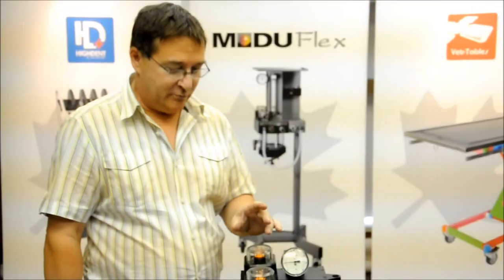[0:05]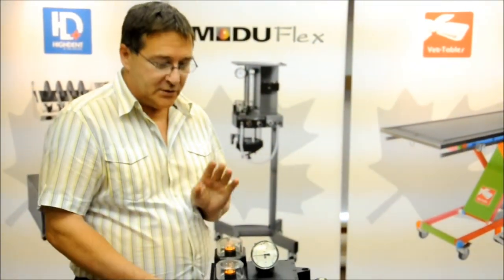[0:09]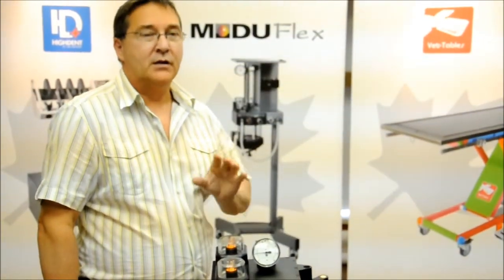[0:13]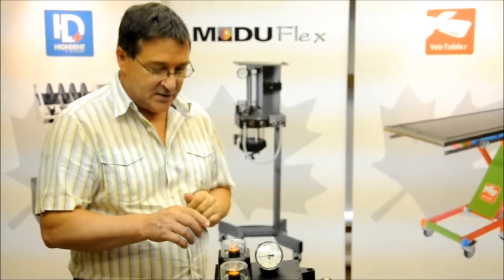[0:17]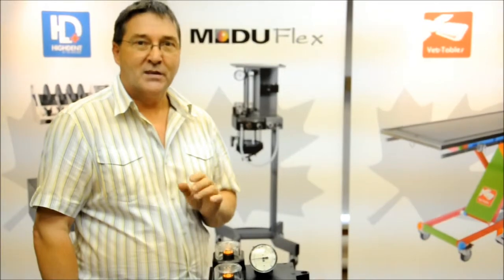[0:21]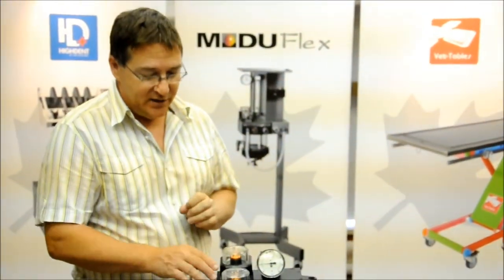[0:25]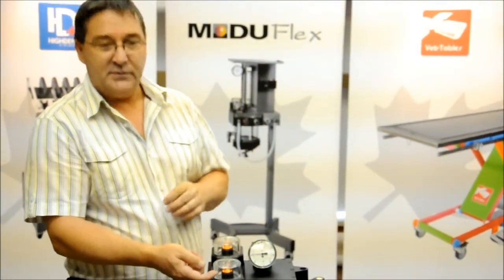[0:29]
The first situation we'd like to address is overpressure in the breathing circuit bag. This overpressure can be caused by a couple of different things. One of the things that can cause this is a bad positioning of the inhalation and exhalation discs. What we need to do is check how much space is located between the disc and the disc pins.
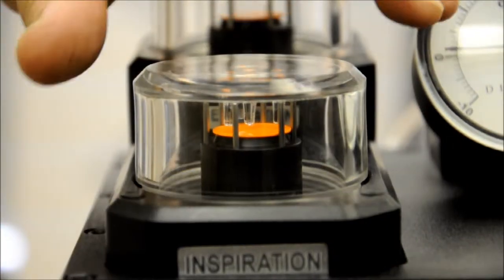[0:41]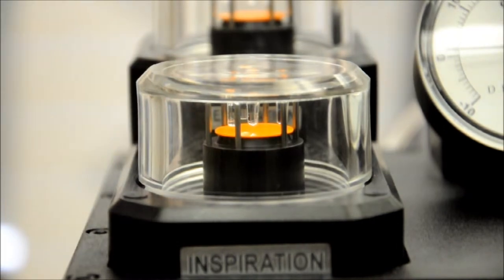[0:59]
For demonstration purposes, we will be using this model of absorber. It may not be the same one that you have, but the parts are all the same. Now, one thing that may happen is during transport, if the box has received a large shock, the inhalation and exhalation disc seats may have become dislodged. If this is the case, then the displacement of the disc, the orange disc or the blue disc on some absorbers, may not have sufficient space to move properly.
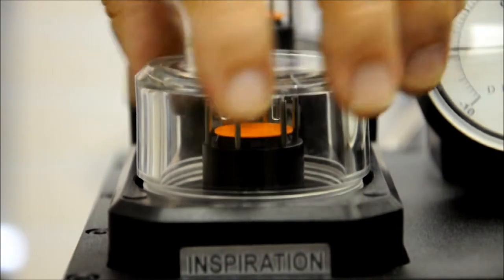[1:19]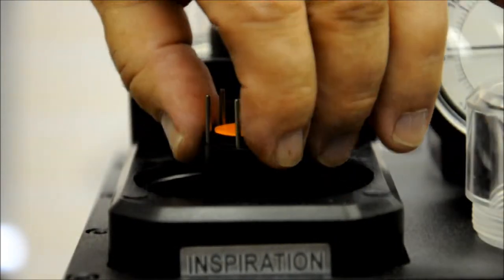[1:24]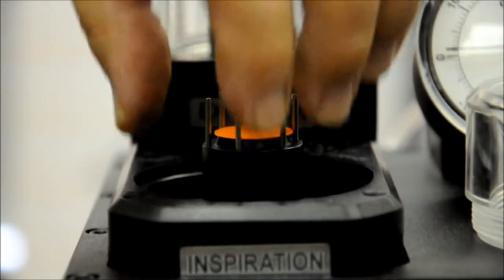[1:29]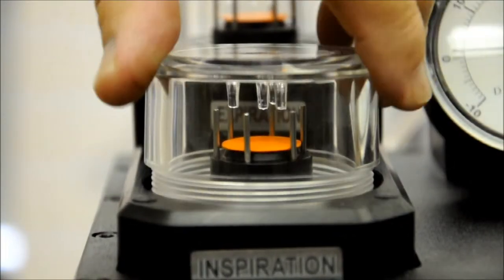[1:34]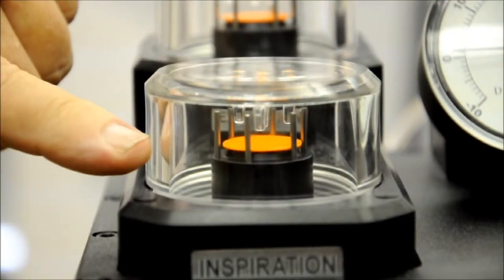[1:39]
If you notice the amount of space right now between the disc and the pins on the dome, they are insufficient. This is because the seat has become dislodged. In order to reposition the seat, remove the dome and make sure that the seat is pushed in all the way. You'll feel a little bit of tension as there's an O-ring being pushed through. Now, when we reposition the dome, you'll notice how much space that we have between the disc and the pins.
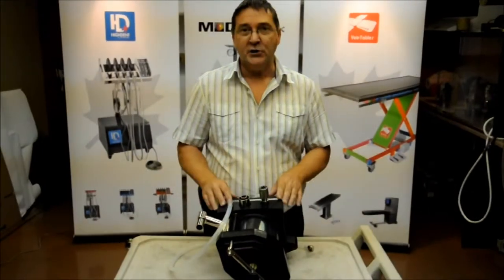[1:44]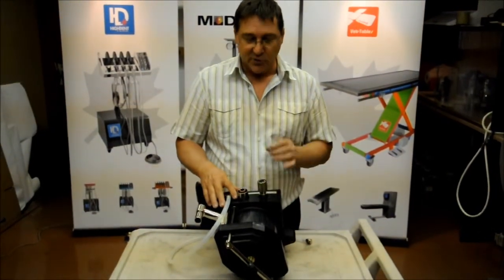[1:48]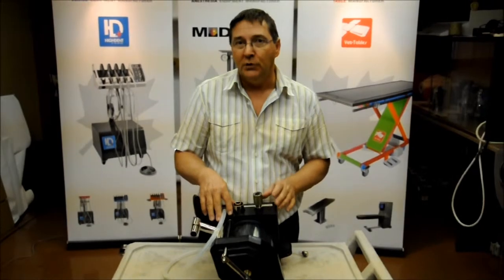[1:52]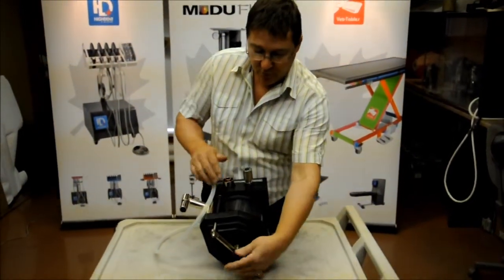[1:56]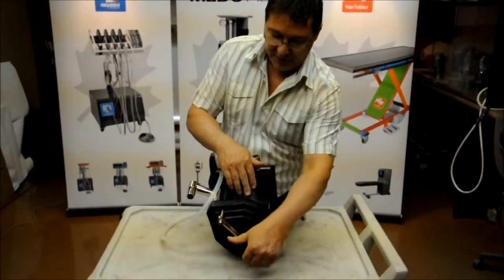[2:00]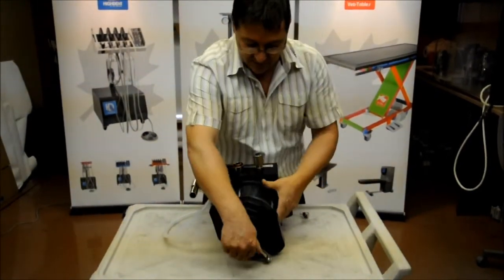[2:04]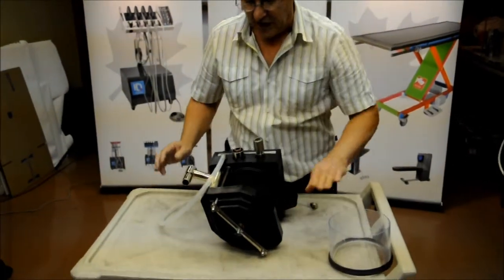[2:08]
Now, for demonstration purposes, I took an absorber and I put it on a table just so that it'd be easier for you to visualize what we need to do. Now, the first thing we have to do is remove the soda lime canister. So we unscrew the screw beneath the canister till there's enough displacement to take it out. And you put the canister to the side.
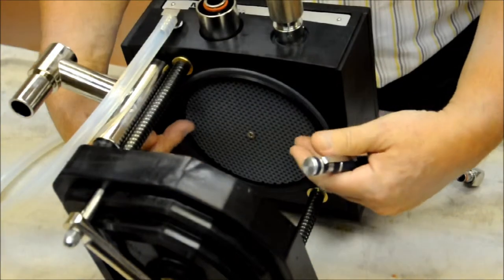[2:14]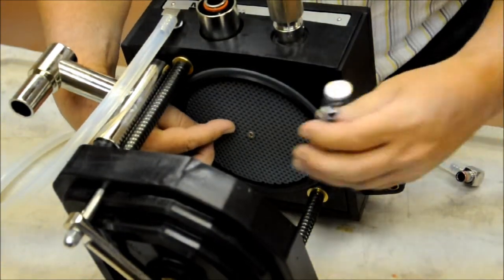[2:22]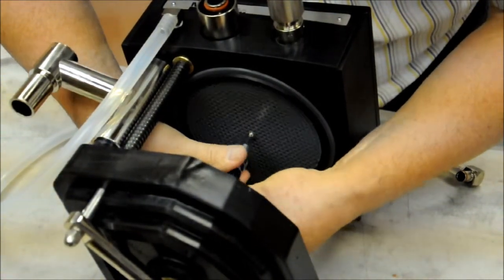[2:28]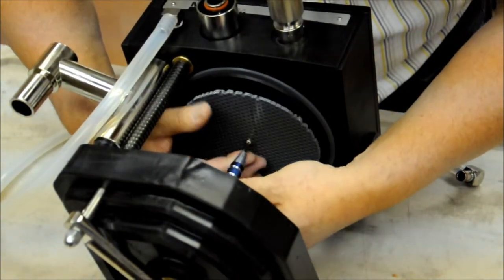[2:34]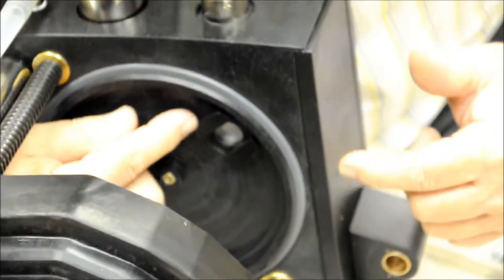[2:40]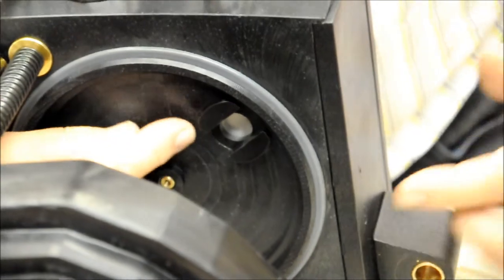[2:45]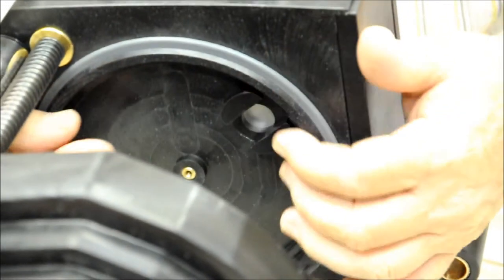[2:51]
When you remove the soda lime canister, you'll notice here we have a perforated grill. In the center of the perforated grill, there's a Phillips head screw. We need to remove this screw and remove the grill. You'll notice that when the black perforated grill is removed, we can see a black piece located here that's got a slot in the center. This is a seat valve.
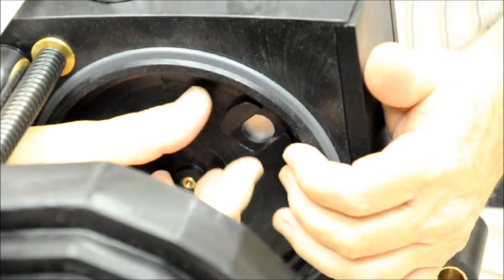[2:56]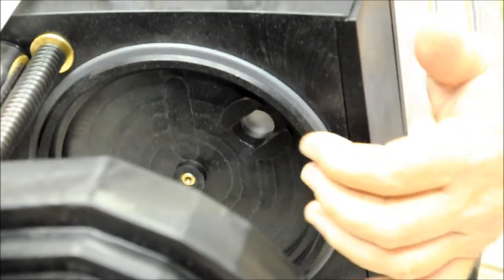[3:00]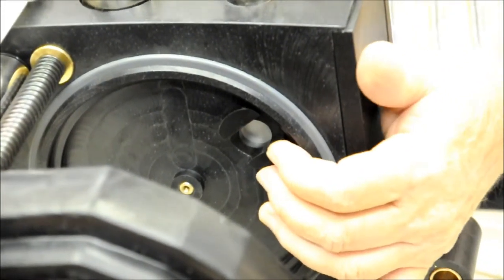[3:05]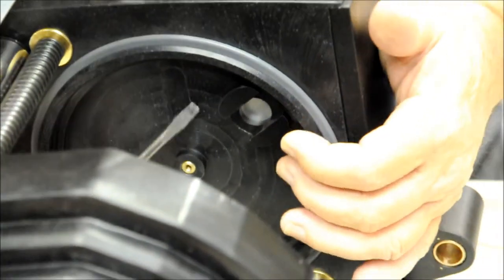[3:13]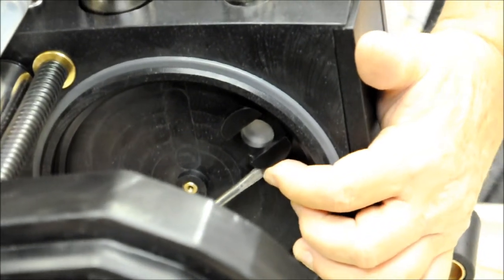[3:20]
This seat valve is what controls the size of the bag. If this seat valve is defective, either by dirt or any other problem, then the bag will be either overinflated or underinflated. We need to replace this seat valve assembly. The way to do it is we take a small flat screwdriver and we insert it on the side, on the edge of the lips on both sides of the absorber. A little bit at a time on both sides, and the seat assembly will pop out.
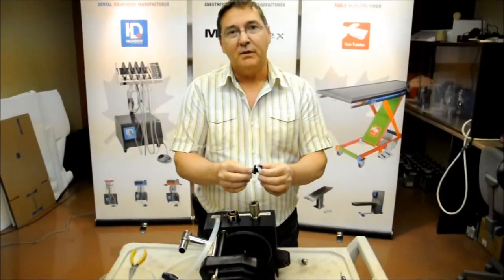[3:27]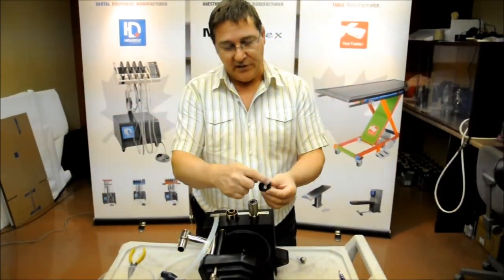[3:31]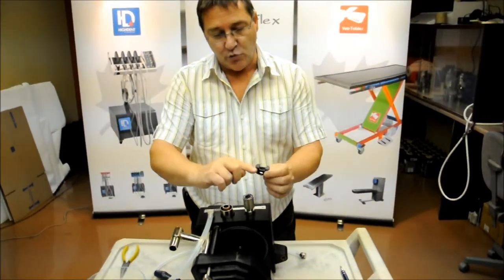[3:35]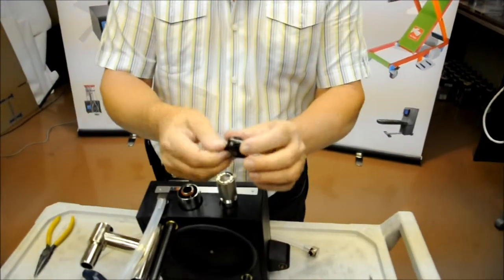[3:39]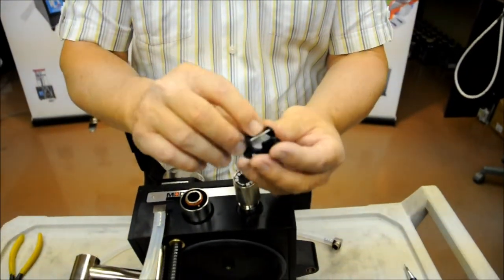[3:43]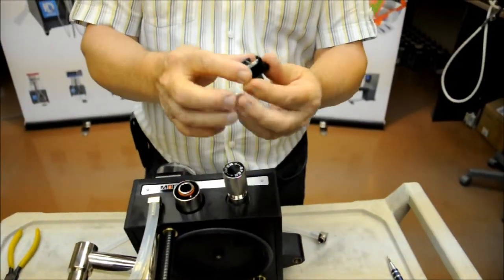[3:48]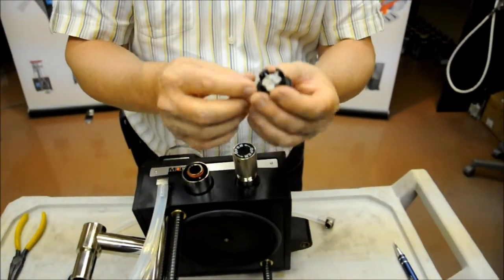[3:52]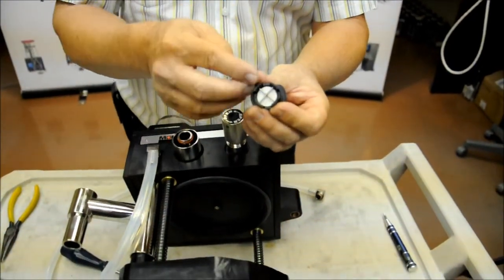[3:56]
This is the seat assembly that we just removed. Notice the edges on each side. When we pried it off, we pried it by inserting the screwdriver below here and below here. Inside of this seat assembly, there's a stainless steel disc with two little rods. Now, the ideal situation is that we replace the whole assembly. If we don't have one, we can correct the problem by flipping the disc over.
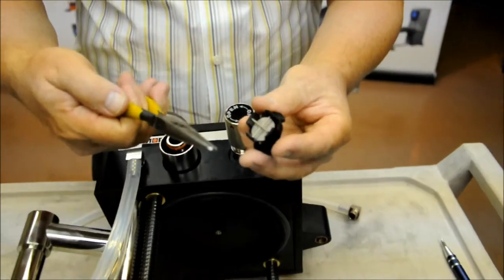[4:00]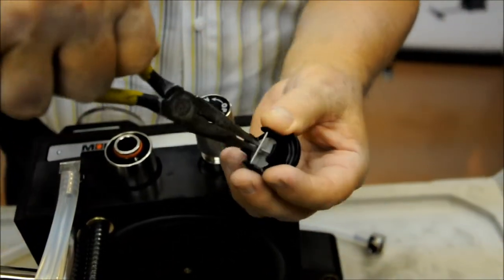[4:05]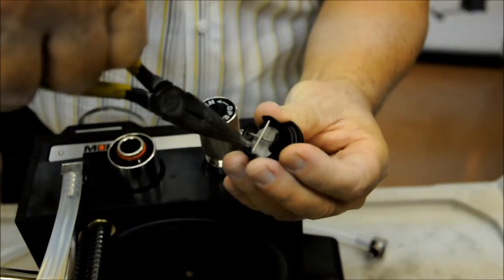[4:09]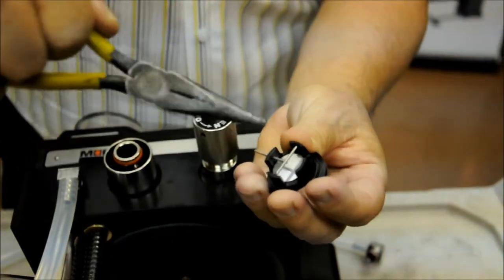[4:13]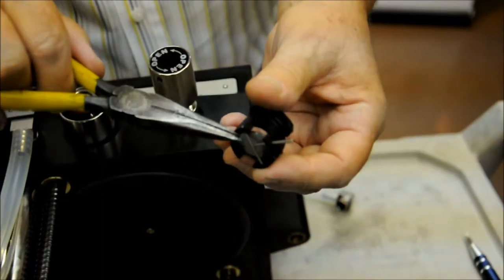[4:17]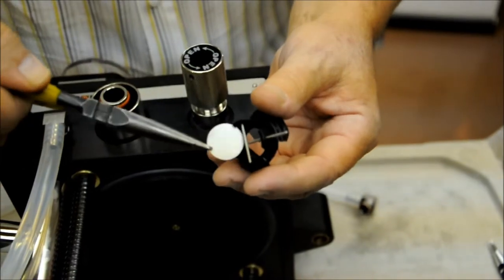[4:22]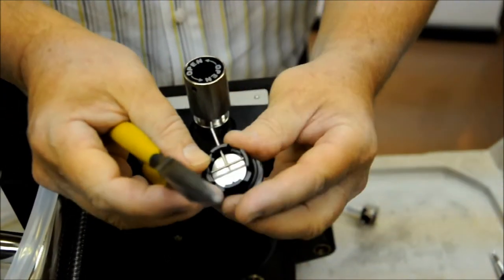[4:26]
In order to do that, we take a pair of pliers and we remove the lower bracket, that's the lower pin that's holding the disc in place. So we just push it out about halfway. Once it's pushed out, we can tilt it over, grab the disc with the pliers, do not force, just pull it slightly and then flip it over, put it back into place and push the pin back in.
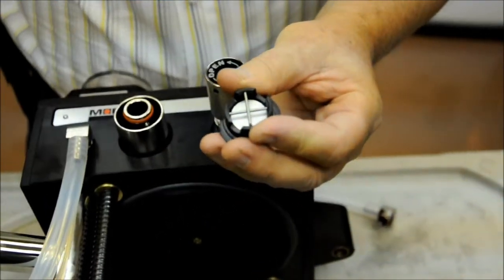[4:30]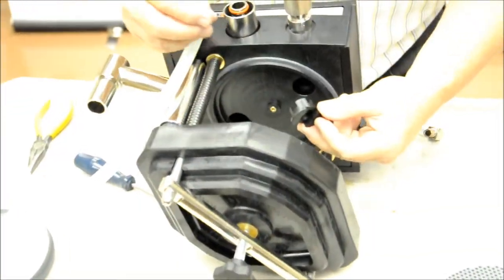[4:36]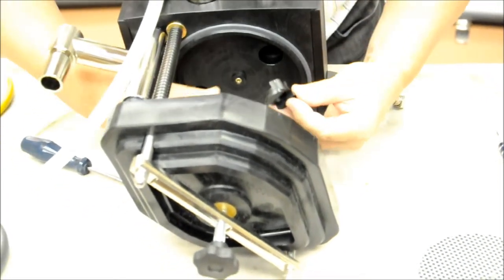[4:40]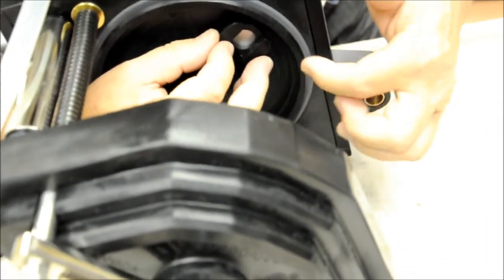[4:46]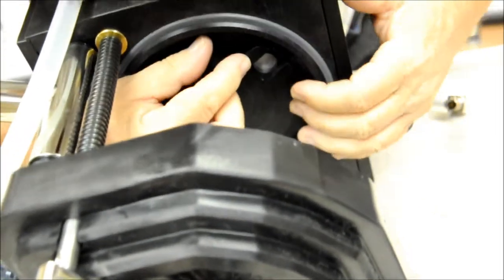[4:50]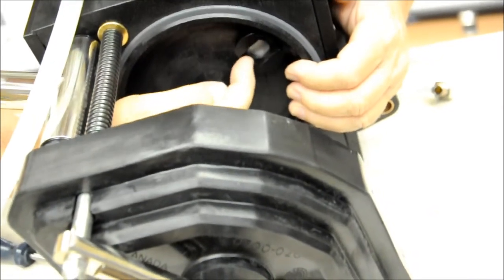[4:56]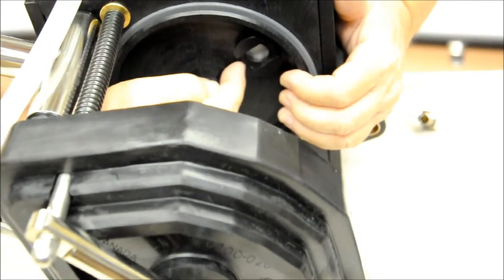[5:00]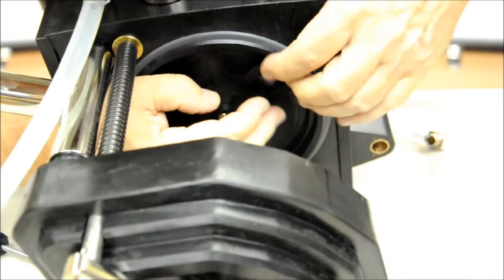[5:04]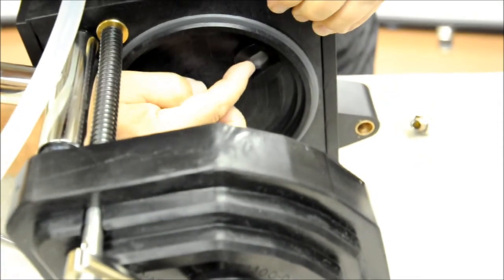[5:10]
Next operation will be reinserting the assembly. Now, to reinsert the seat, it's very important to observe the position. Take the seat, bring it up towards the hole and line up the two edges so that they don't conflict with the outer wall here. We push it in slowly and push it in with our fingers. You'll notice here this edge has to line up with the base of the absorber. Now we push it in. You may require pushing in firmly, and this edge here has to be lined up with the absorber. Once that's done, it's installed.
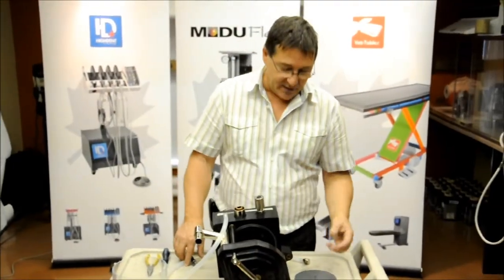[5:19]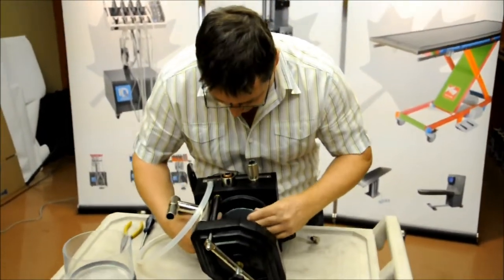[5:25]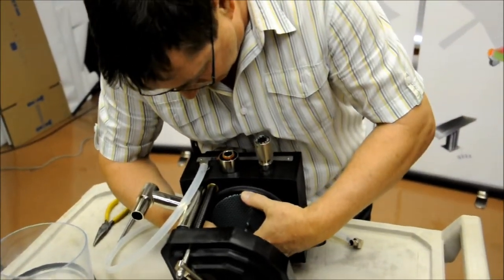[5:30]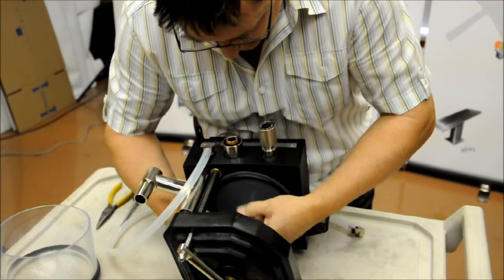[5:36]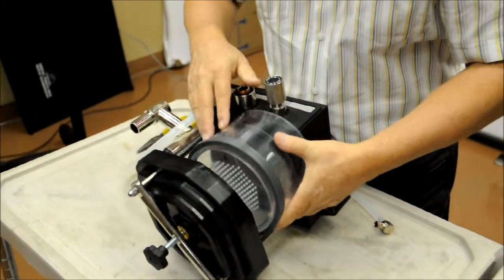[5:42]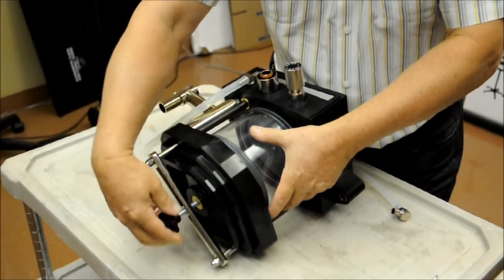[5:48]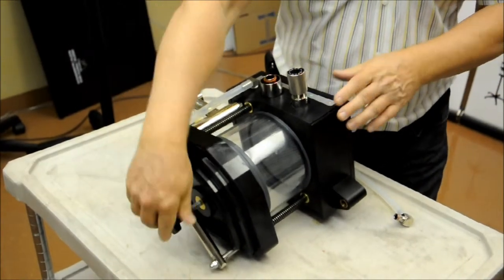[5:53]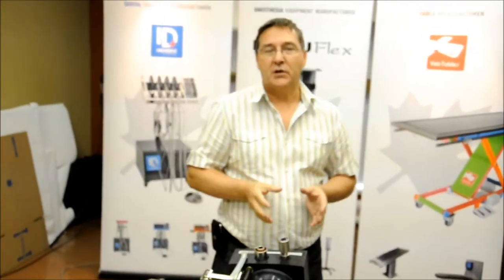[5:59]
Now that we've reinstalled our disc, we need to reassemble the absorber. So we take our perforated grill, we reinstall it. Reinstall our soda lime canister, tighten the canister into place. Now all we have left to do is test our machine to make sure that everything operates properly.
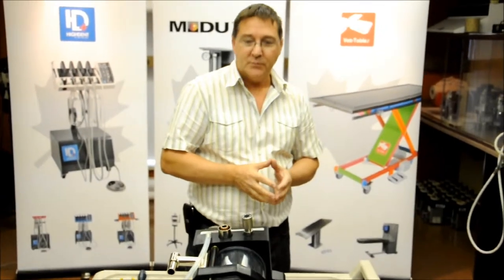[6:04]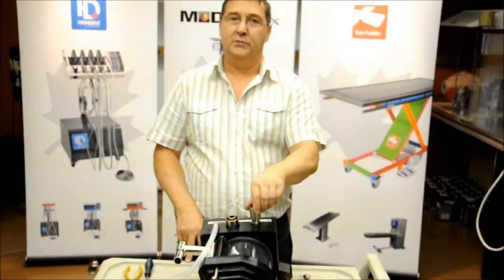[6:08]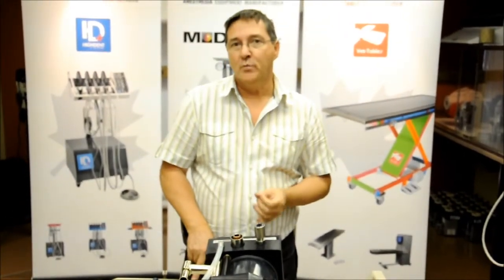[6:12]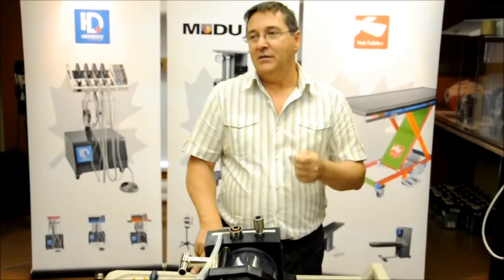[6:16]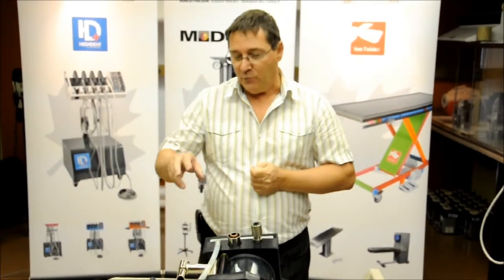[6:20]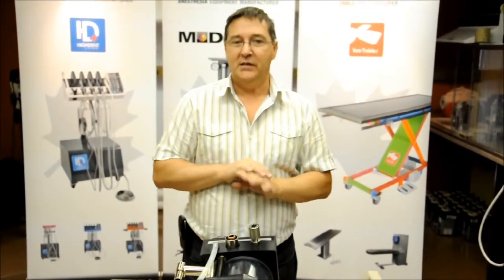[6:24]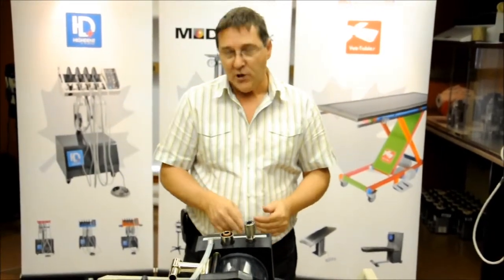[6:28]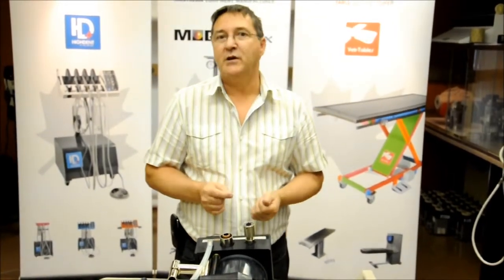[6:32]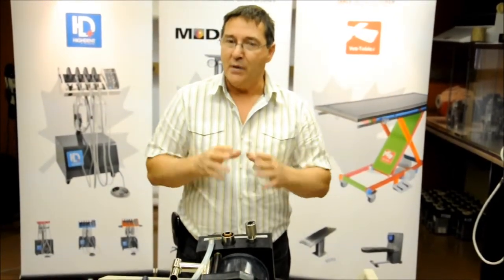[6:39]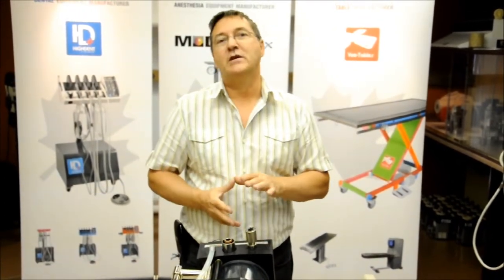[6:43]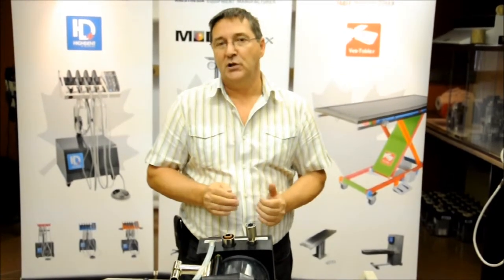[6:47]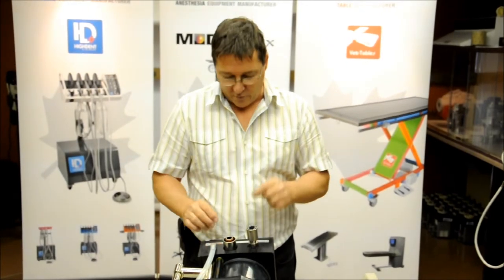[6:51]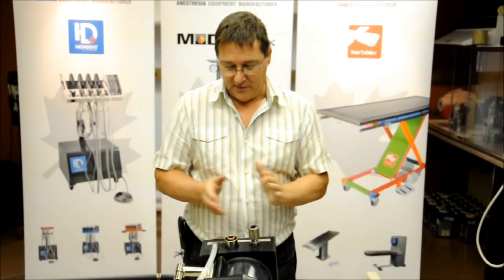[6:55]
Once it has fully inflated, the reading on your pressure gauge should not vary by more than 2 centimeters of water. Once it's stabilized, that should be a normal condition, and your bag should also be inflated to approximately 1/2 to 3/4 its size, but with no excessive pressure buildup, 2 centimeters maximum. Make sure that the needle is at zero before you start doing your checks.